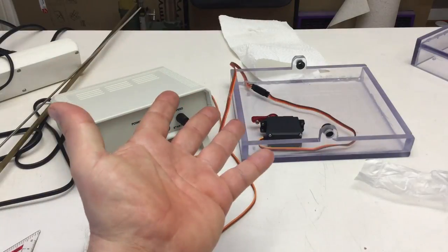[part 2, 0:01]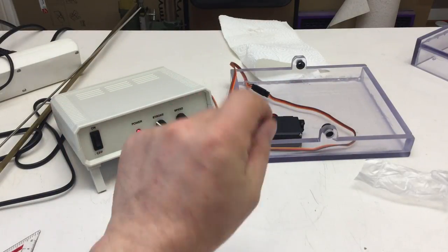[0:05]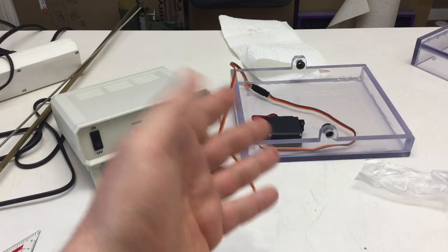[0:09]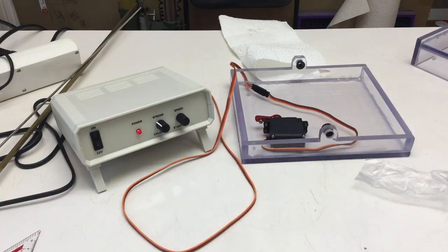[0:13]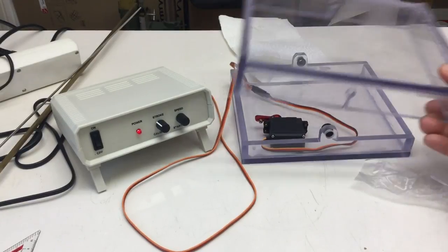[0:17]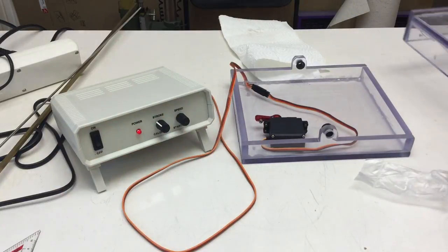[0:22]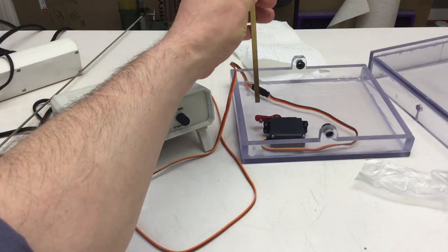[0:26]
Welcome back to the fourth part in my laboratory shaker project series. This time I will try to connect my servo in the lower part to the seesawing upper part, and this will hopefully happen through a connecting rod made here out of some brass material
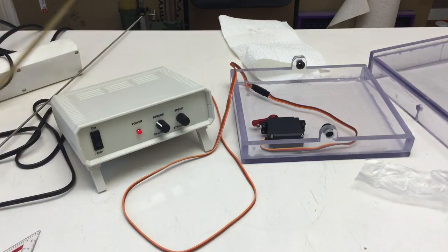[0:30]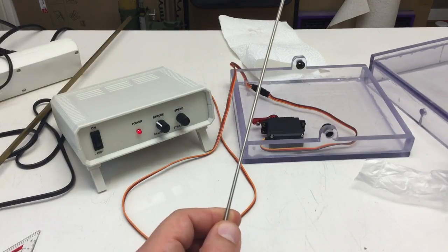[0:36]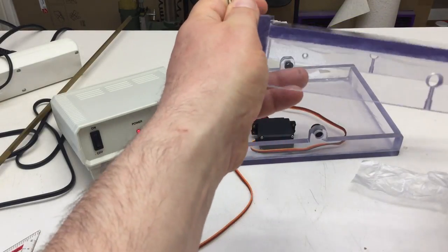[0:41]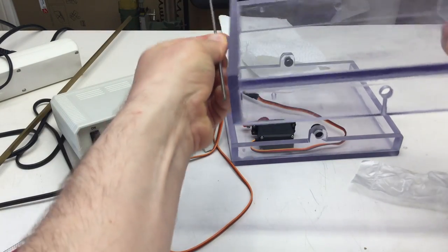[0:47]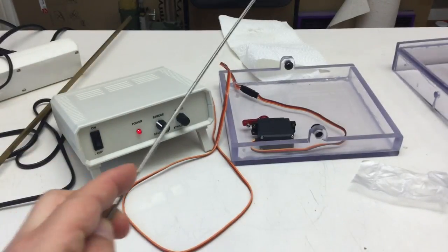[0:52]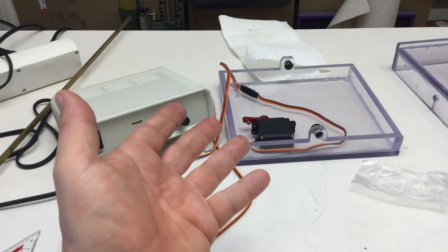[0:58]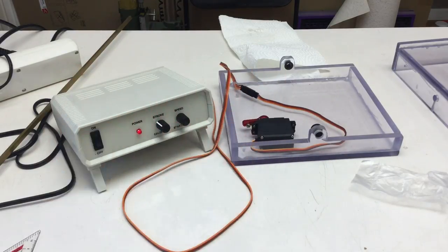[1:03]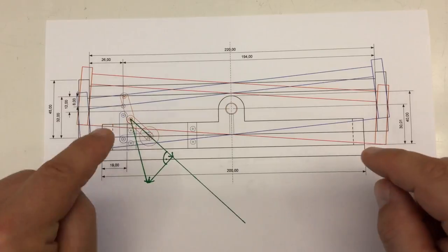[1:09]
and a pin made out of a threaded stainless steel rod that will go, yeah, we already drilled and tapped the holes, that will go as a pin through the top part and connect to the connecting rod. This will also probably be the last part for now about this project, because afterwards I have, hopefully, a working laboratory shaker. Before we dive in and actually make some chips, let's review the plan again.
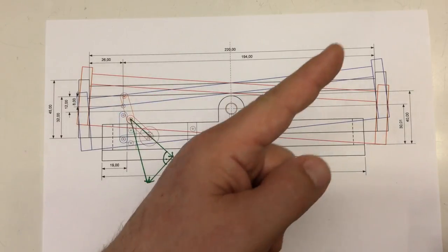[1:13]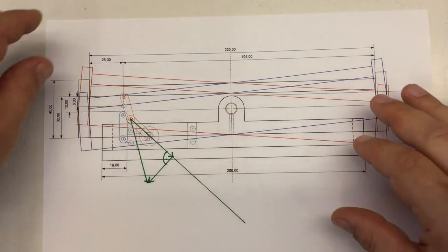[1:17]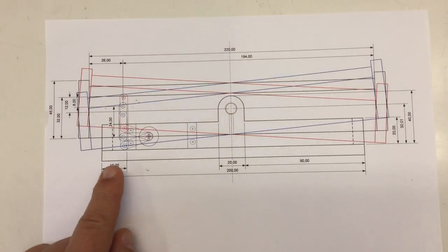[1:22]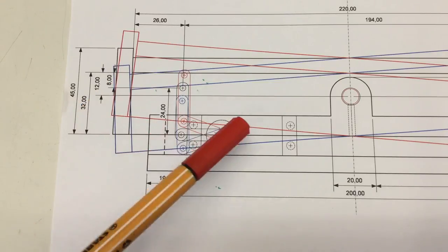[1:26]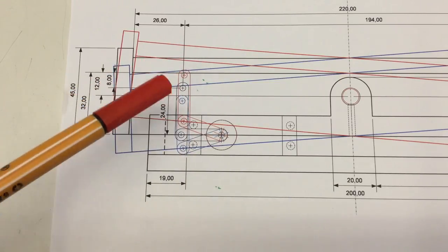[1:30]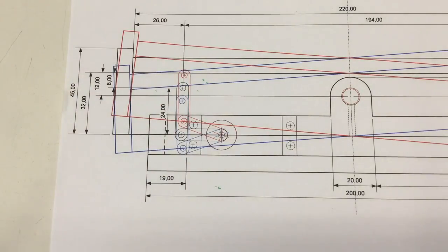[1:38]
That was the plan I showed you in part one, card here, link in the description, and I revised it slightly. It looks now something like that. The two differences to the original are really the length of the connecting rod, which is longer now, and the movement range of the servo, which is smaller now.
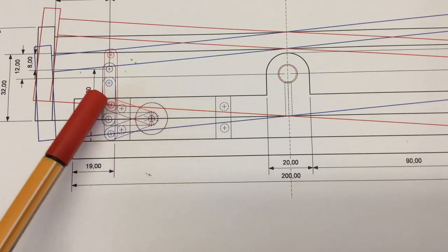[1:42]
So, first order of the day would be to shorten that servo arm because it is too long, then somehow create that connecting rod and the pin. And finally, mount the whole thing here, the servo in the lower part, and then put everything together.
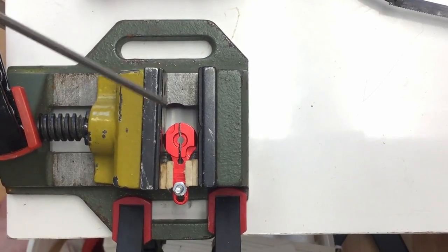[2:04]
It was quite hard for me to get a grasp on that servo arm, but yeah, lots of shimming involved, and in the end I managed to do it. I also put in a screw here with washers on the top and the bottom, the washers being steel, the servo arm being aluminium, so that hopefully keeps me from sawing into the meat that I actually need later on.
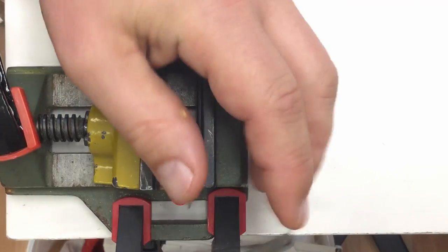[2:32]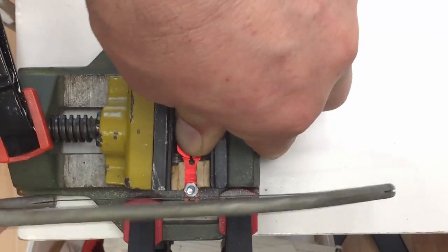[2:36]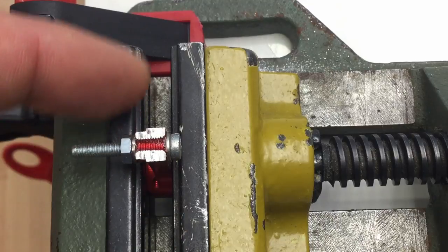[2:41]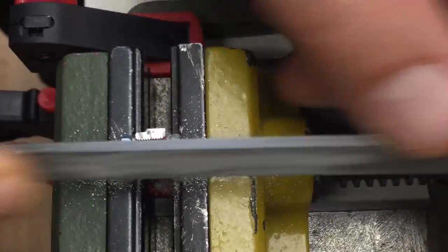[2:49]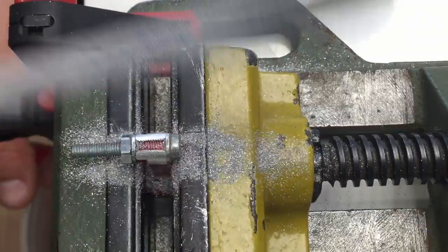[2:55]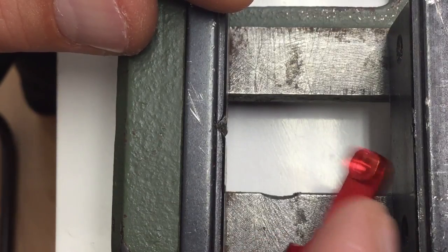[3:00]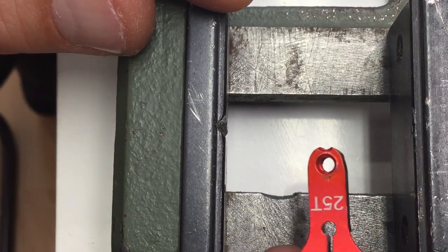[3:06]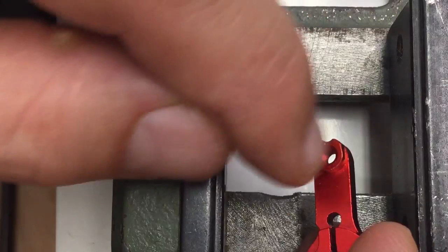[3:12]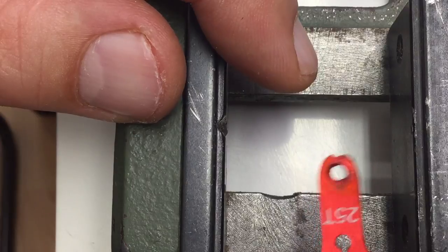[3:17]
Now I file a radius on here, again using the washers as kind of a guide. I touched it up with a little bit of red Sharpie, yeah, just for cosmetic reasons, and well, not perfect, but reasonably enough. I mean, the washer was, of course, a little bit off center, but yeah, nothing will be in the way of the movement, I guess.
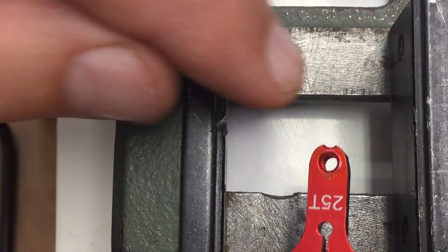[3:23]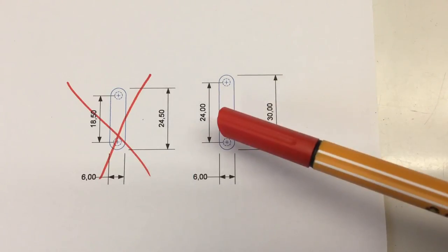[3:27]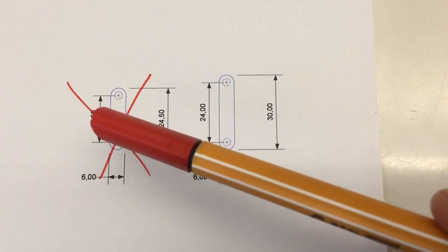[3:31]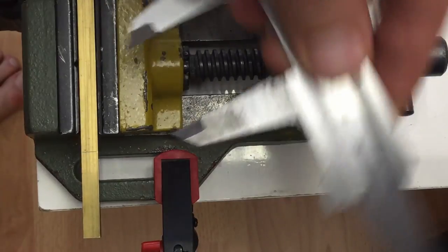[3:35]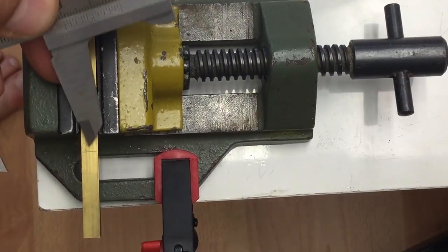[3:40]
So let's continue with the push rod. That's the plan for the push rod. Really a simple affair. Yeah, that was the old version. Let's get started on that. I made a mark at 30 millimeters approximately, so yeah, I will saw off a little bit left of it.
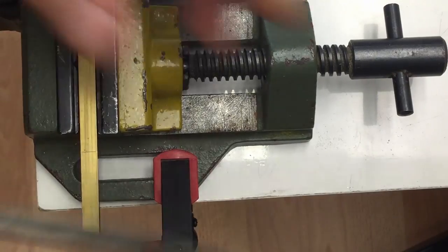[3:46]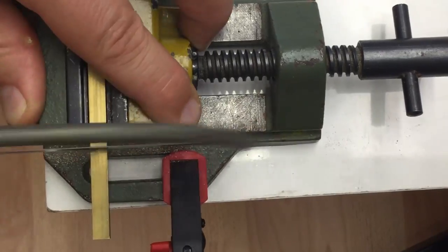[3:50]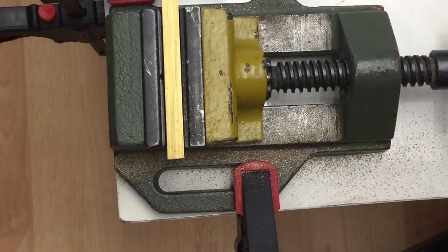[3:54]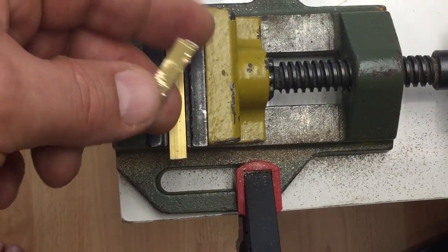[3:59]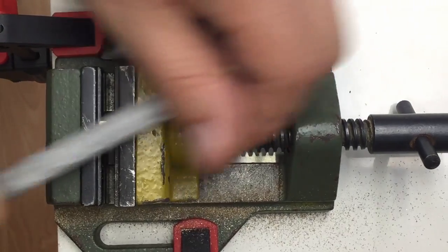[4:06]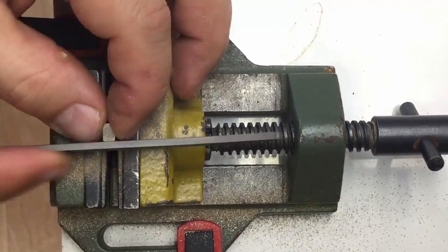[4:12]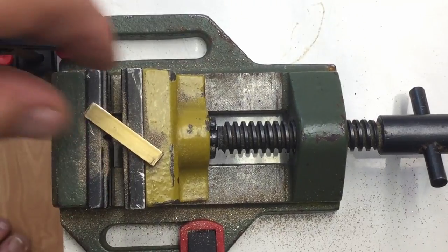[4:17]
I do need new saw blades for the small saw. Yeah. Let's file this to size. I just realized I don't really need to file it down to the final size, because I will put some radii on it on both ends anyway. So the important thing is now to place the holes at the right spots.
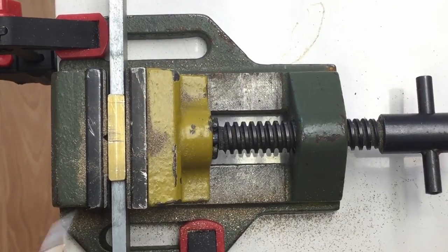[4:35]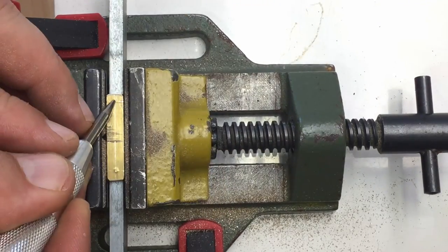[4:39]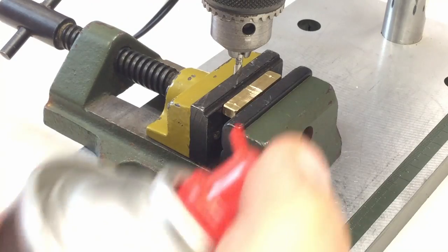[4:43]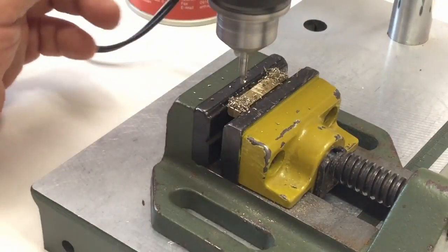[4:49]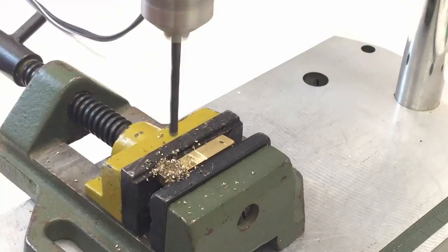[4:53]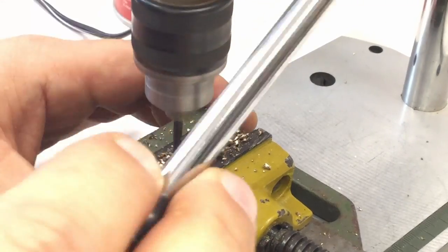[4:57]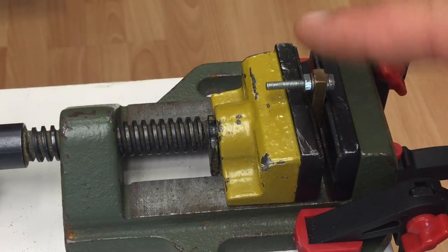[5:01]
And we're back to filing radii, and yeah, I use the same trick here with the washers and the screw through the hole. And fun fact, did you know that the first evidence of people using connecting rods in some kind of machine goes back only to the late 3rd century AD? So connecting rods are around for only 1,700 years or so. Well, maybe a little more, but yeah, you should think they figured that out earlier, but evidently they didn't.
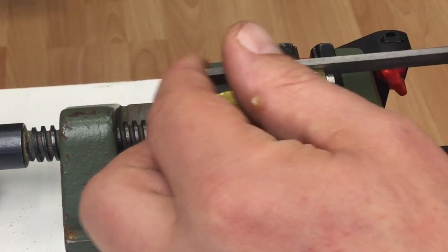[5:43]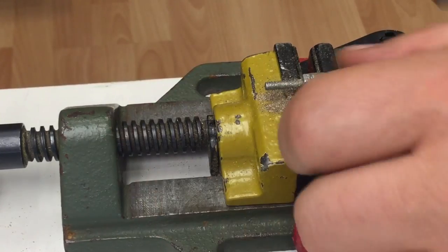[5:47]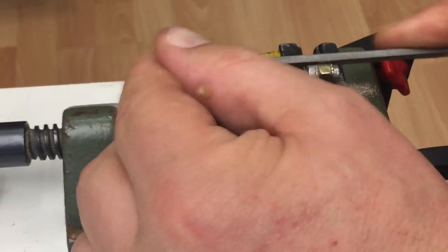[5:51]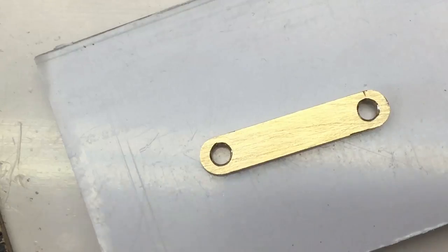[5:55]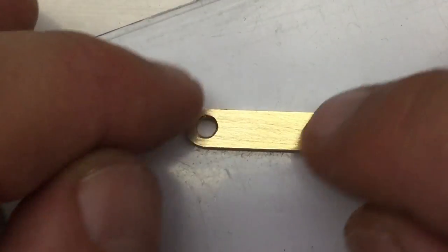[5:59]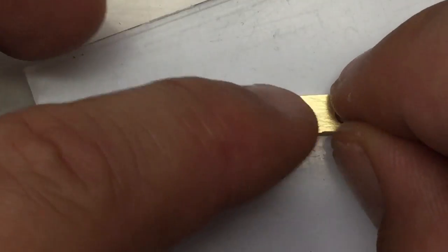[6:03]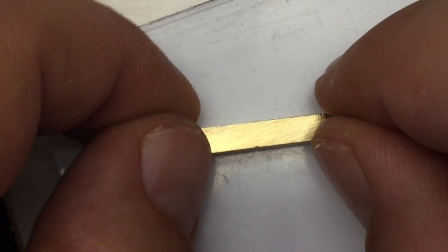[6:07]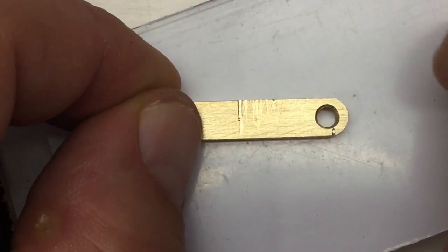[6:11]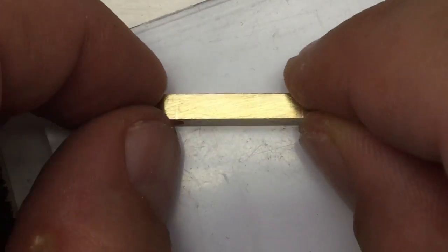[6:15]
So, that was a push rod, and yeah, I went over it with a little bit of sandpaper and then polished it. Well, not polished, but you know, with some stainless steel cleaning paste. And yeah, that was from the sawing, that was totally me, but yeah, it's nice and shiny.
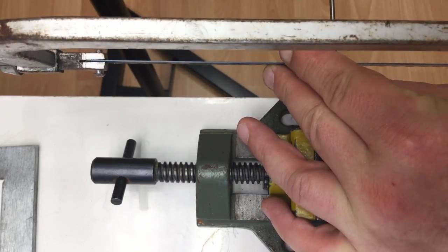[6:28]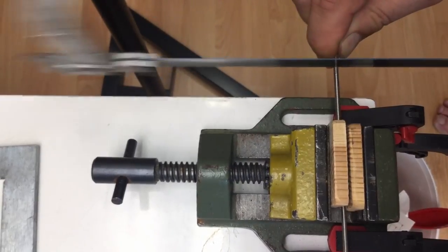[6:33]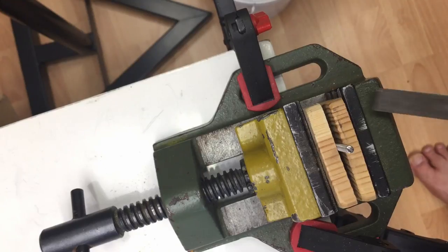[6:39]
The threaded rod, yeah, first saw off a 200 millimeter piece. I hope I'm sawing at the right side here of the marking. Next, I want to file kind of a cone here at one end. So if we push that thing through all the holes, we actually have a fighting chance of it getting through. And of course, I have wood in here just to, yeah, preserve the threading.
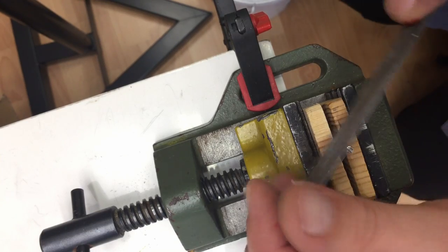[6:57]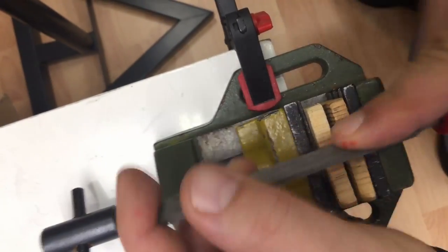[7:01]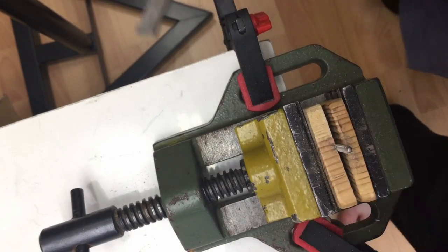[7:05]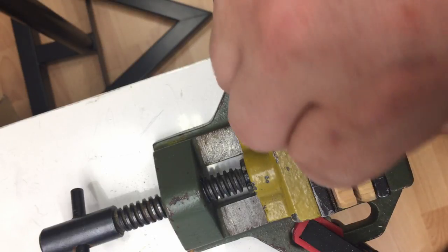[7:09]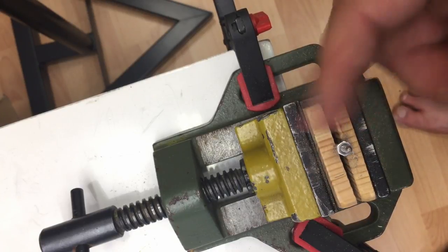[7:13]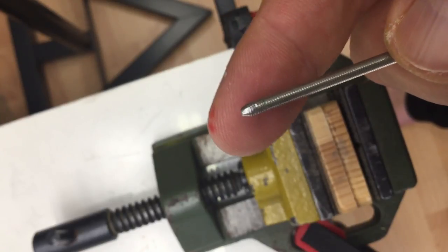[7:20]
That's coney enough. Let's see if we can still thread. Yeah. A nut on. Perfect. No problems. And yes, it's coney as hell.
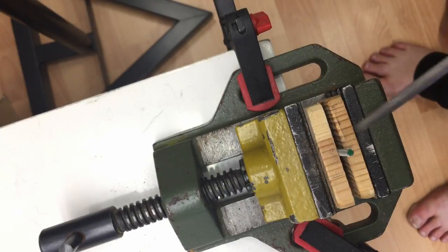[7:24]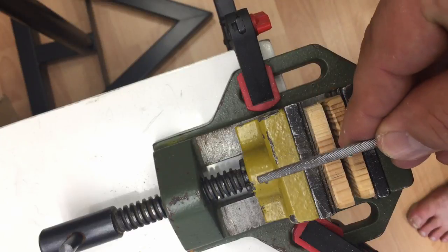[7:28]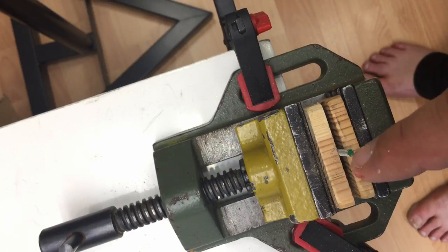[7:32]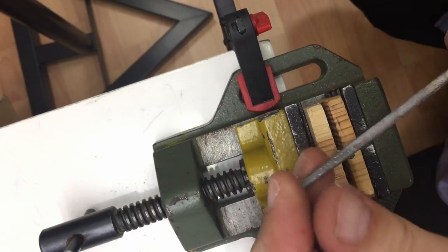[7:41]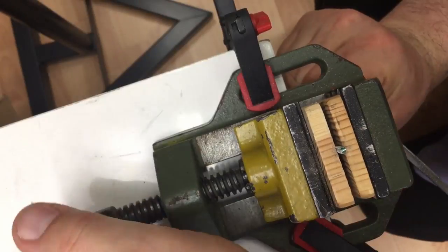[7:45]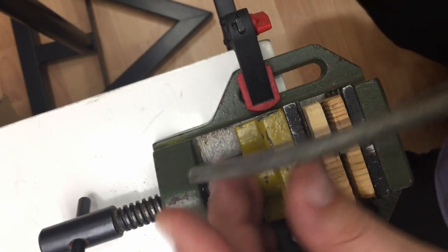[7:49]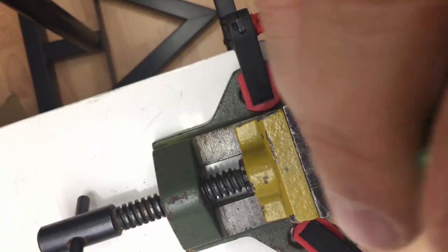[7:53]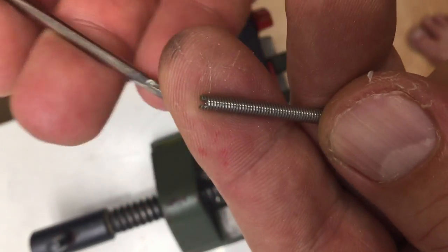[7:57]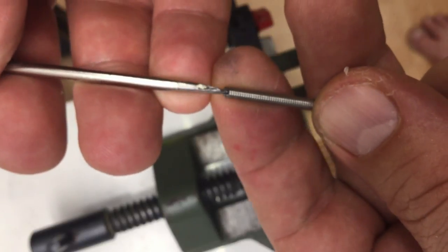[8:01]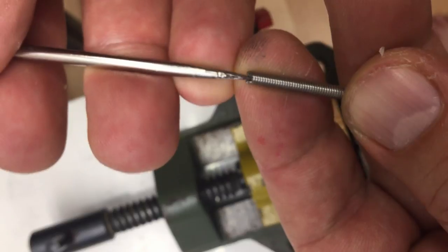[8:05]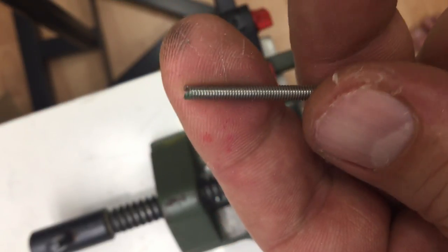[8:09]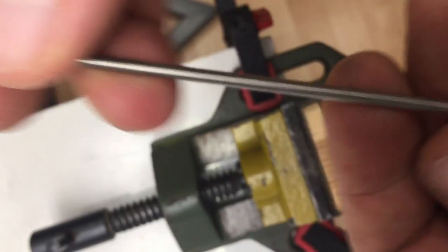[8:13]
Last operation on that rod, I want to have a slot, so I can turn it with a screwdriver for the last 5 millimeters through the holes when I can no longer grab it. So, yes, that fits perfectly. Any kind of suitable screwdriver. And now we could call the whole thing, instead of a threaded rod, yeah, a very long screw
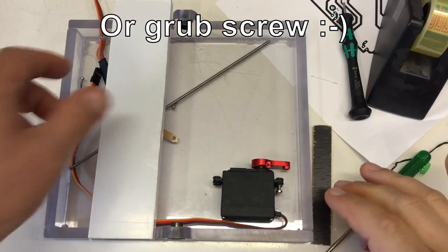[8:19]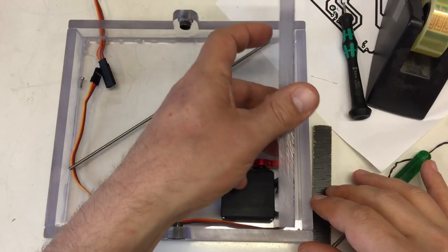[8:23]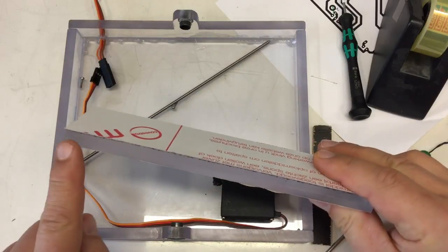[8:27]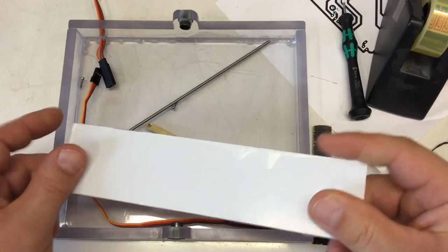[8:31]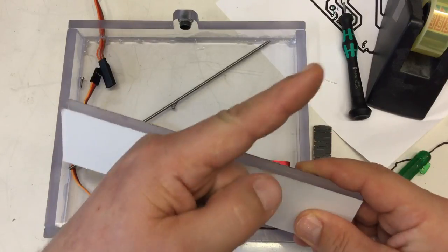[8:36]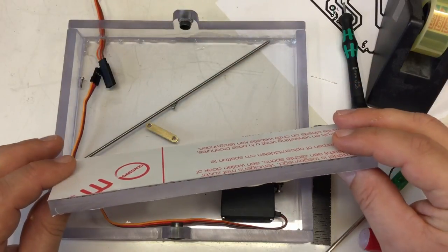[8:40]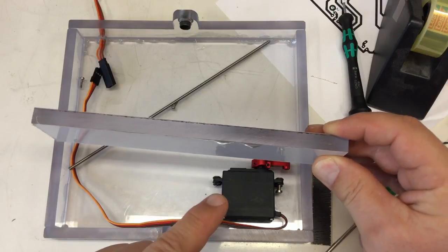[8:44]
without a head. The last parts we need are some polycarbonate blocks here and here to mount the servo. And I will use for that 10 millimeter polycarbonate that I have left over from the laboratory water bath project. Card to the playlist here, link in the description. But there are some difficulties there.
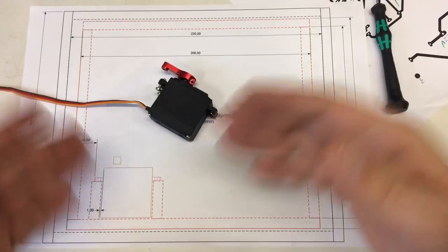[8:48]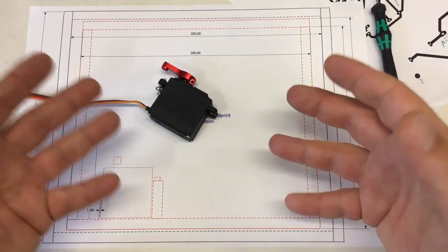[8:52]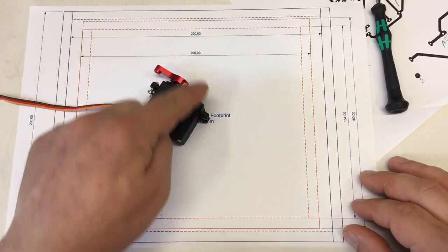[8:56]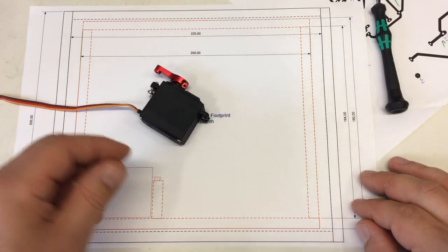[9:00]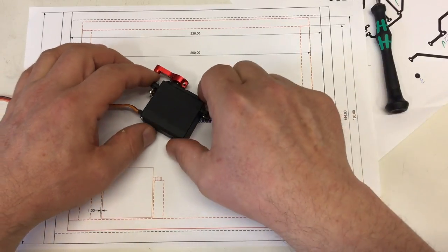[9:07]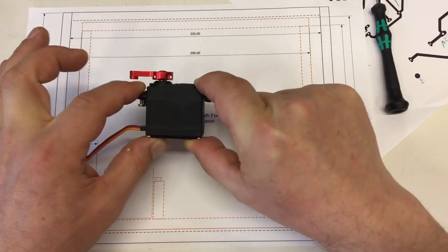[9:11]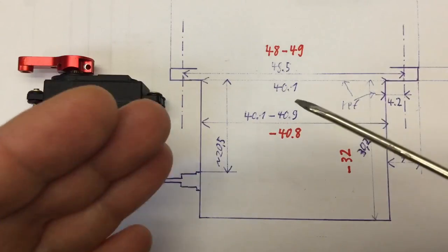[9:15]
You see, when I was planning the whole thing, I was under the impression that servos of a certain size, like a full-size servo, and there are mini servos and micro servos, maybe there are even pico servos, I don't know, I'm not an RC guy. But I was under the impression that a servo of a certain size has a certain size. Turns out that was a wrong assumption.
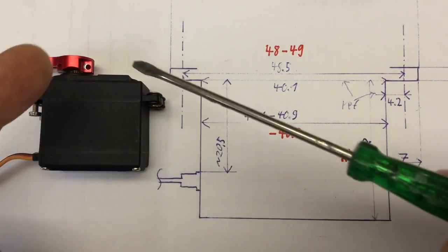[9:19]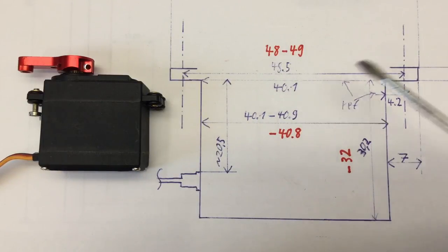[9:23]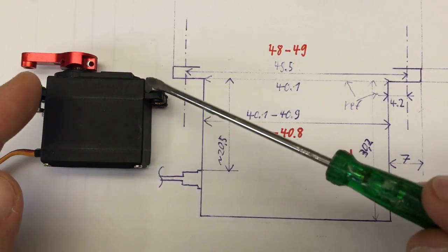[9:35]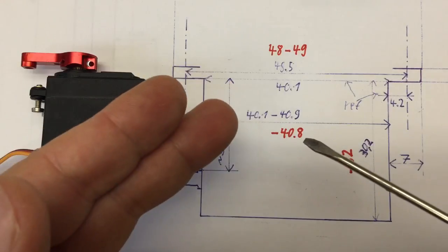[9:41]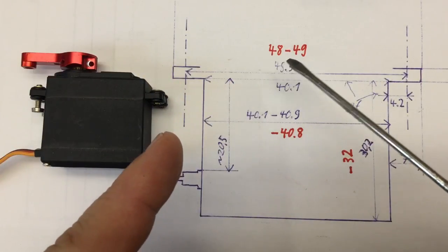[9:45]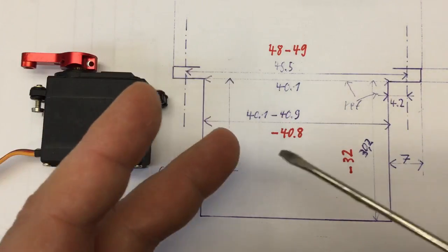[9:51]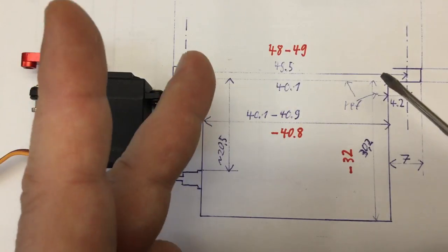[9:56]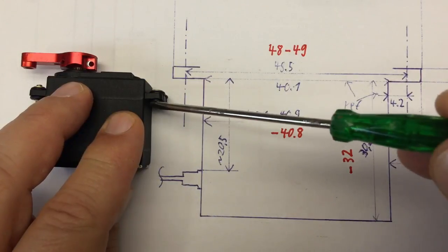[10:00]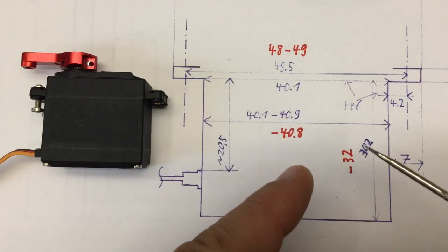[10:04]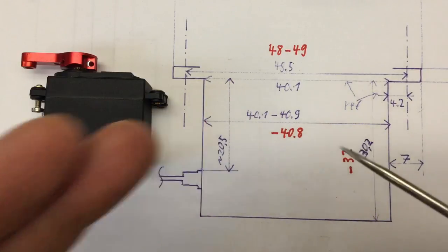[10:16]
So my specific full-size servo here has, for example, 45.5 millimeters between the holes on that axis. And the body is between 40.1 to 40.9 millimeters thick, depending on where you're measuring. Other full-size servos have between 48 and 49 millimeters between holes, and they are up to 40.8 millimeters wide in the body. And from these flanges to the bottom, my servo is 30.2 millimeters. Other servos are up to 32 millimeters. So I'll somehow wing it.
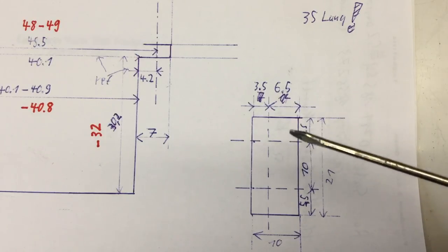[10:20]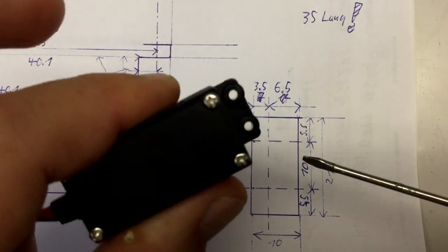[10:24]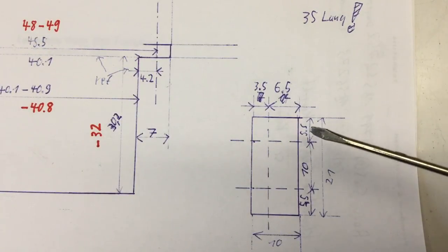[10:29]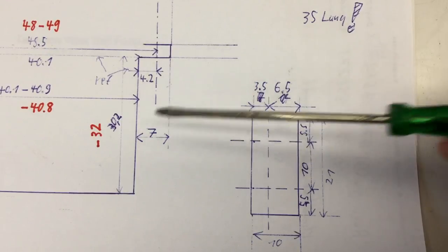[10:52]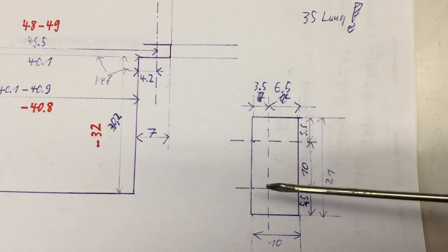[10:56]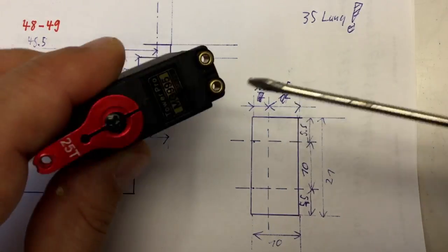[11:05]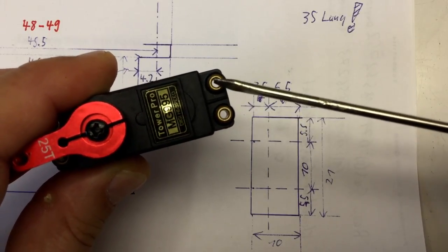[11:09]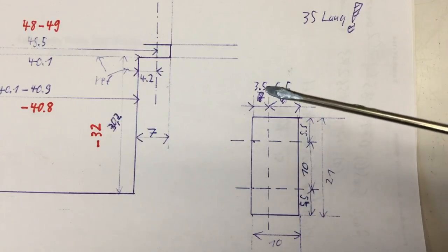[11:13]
And I haven't talked about thickness, yes? So my servo is 19.9 millimeters thick. Other servos are 20 point something millimeters thick. So in height, I will need to accommodate maybe a future servo change, 21 millimeters. And then I will go in with the holes for the screws from the inner edge 3.5 millimeters, and the holes are 10 millimeters apart. That's really about the only measurement that is the same between servos of different vendors. Okay, so let's build these blocks here.
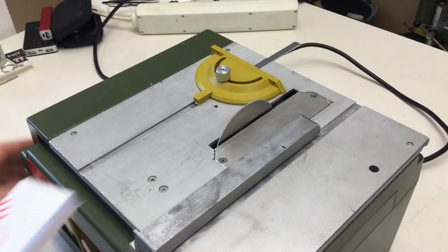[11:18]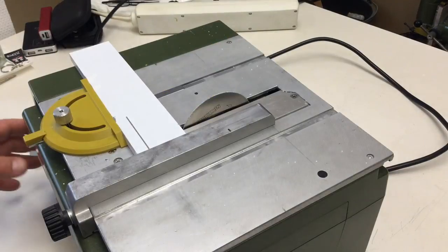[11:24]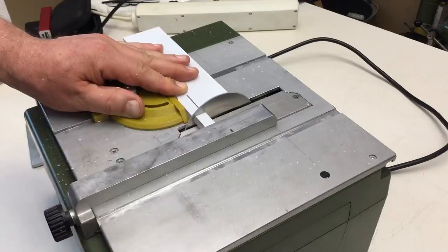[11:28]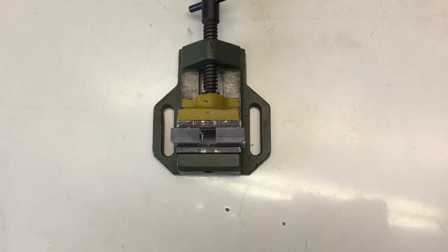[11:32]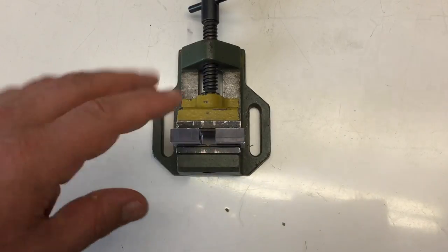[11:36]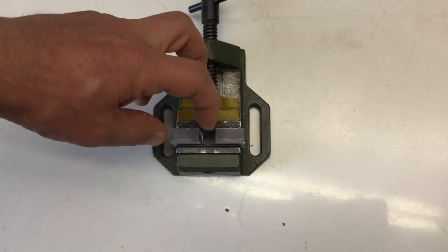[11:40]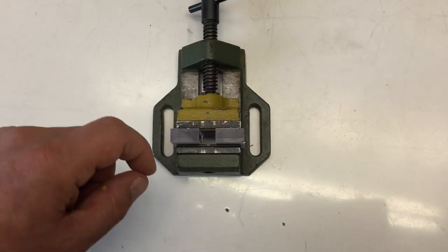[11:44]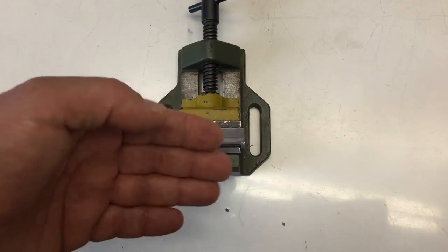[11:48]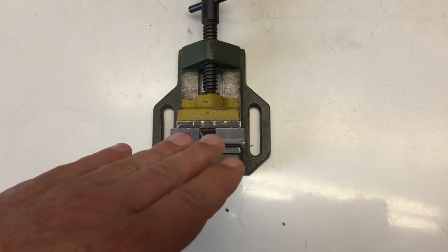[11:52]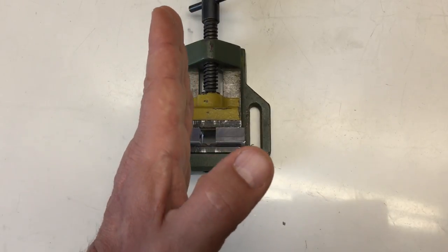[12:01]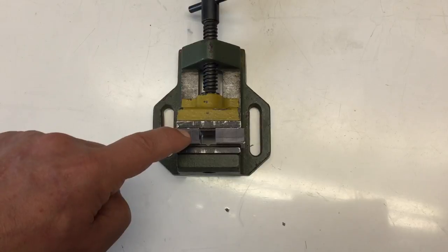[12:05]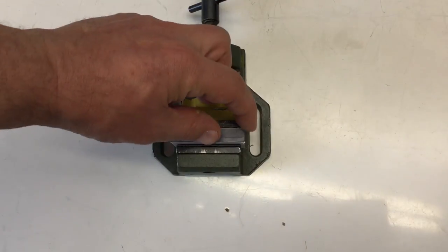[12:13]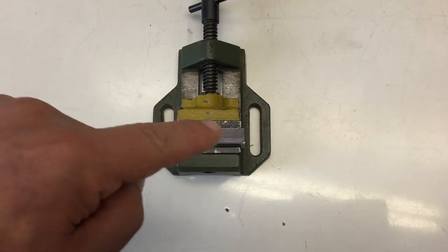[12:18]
Now I have two identical blocks, almost to the size I wanted. Actually, in each dimension I cut half a millimeter too large, and I guess that's a systematic error in my table saw. I was pretty sure I adjusted it to the tenth of a millimeter, but the way that thing is built, the blade got a little bit of flex. So for this material and that blade, I have to subtract half a millimeter in the future from my measurements, or in how I adjust the saw. Anyway, let's put four holes in here and cut some threads.
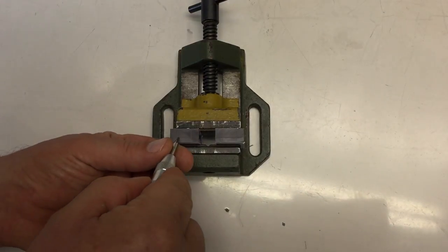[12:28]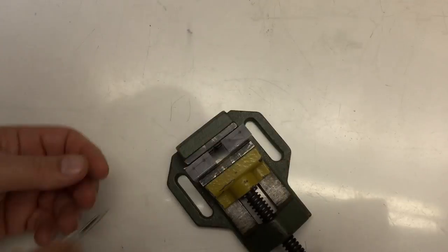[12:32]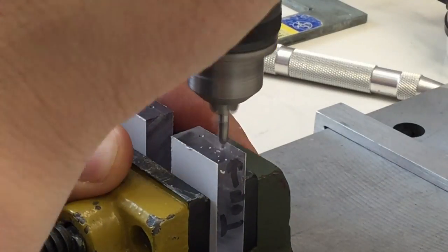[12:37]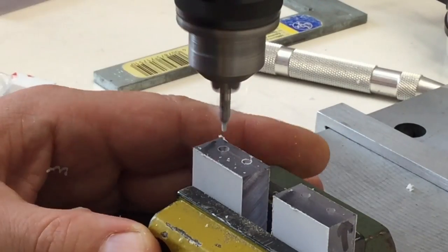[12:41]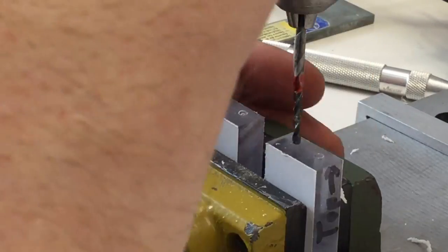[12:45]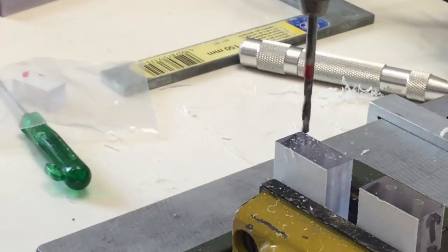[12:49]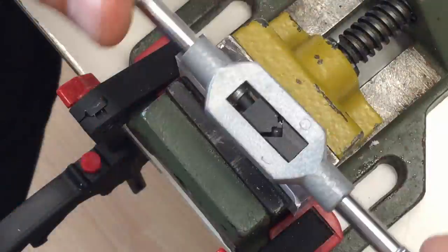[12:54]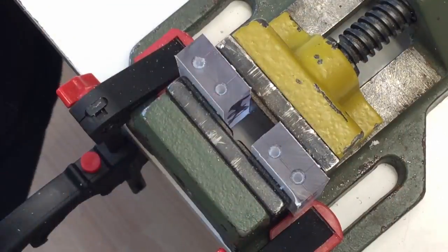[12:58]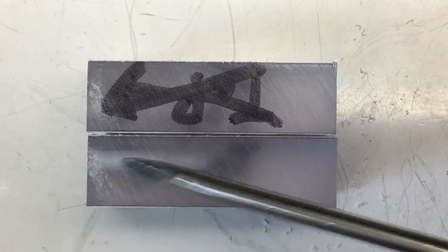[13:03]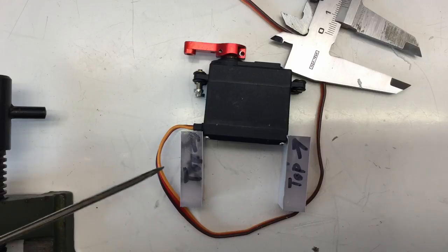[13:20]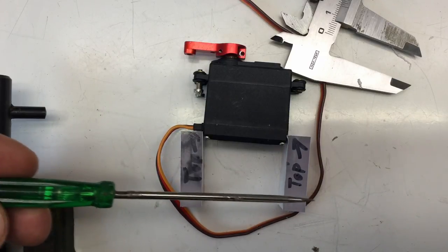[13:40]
Now I have two identical blocks with four drilled and tapped holes. Please note that I drilled the holes 5 millimeters deeper than the tap for the thread is going, so I had a lot of space for the debris and the chips. Now I need cutouts at the back of both pieces for the cable and the cable outlet of the servo. Naturally, the one on this side will be a little bit bigger because of the servo cable outlet, and that one here will be smaller because I just have to pass the cable through.
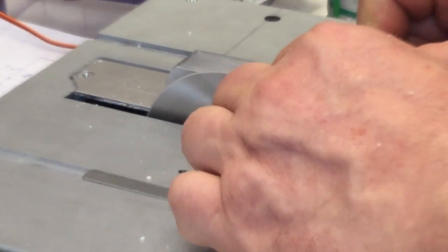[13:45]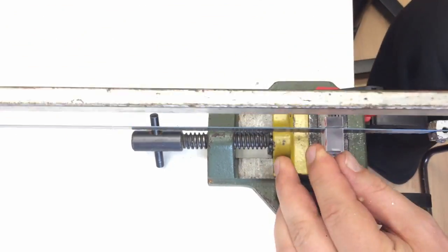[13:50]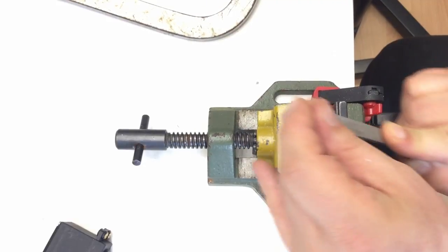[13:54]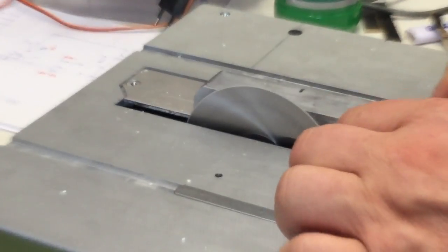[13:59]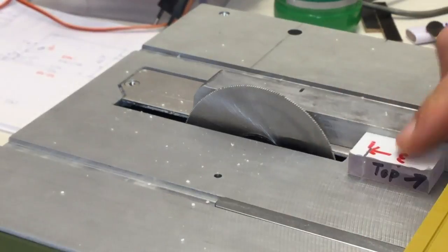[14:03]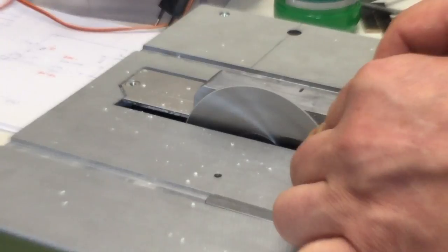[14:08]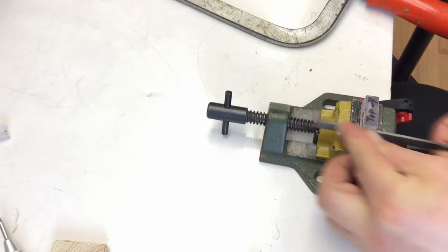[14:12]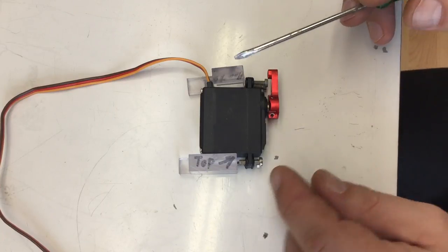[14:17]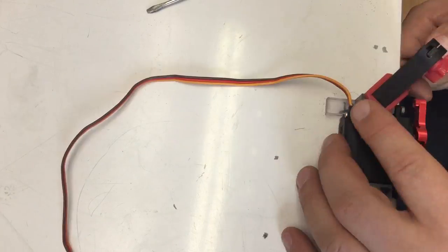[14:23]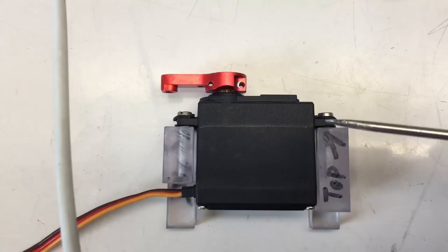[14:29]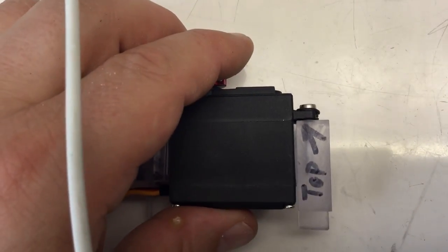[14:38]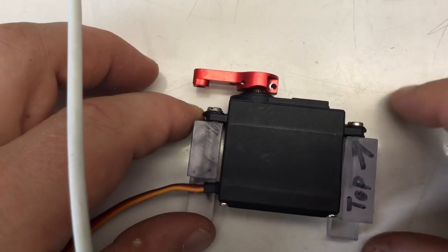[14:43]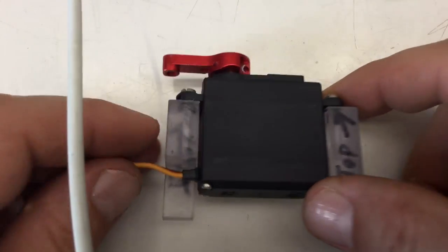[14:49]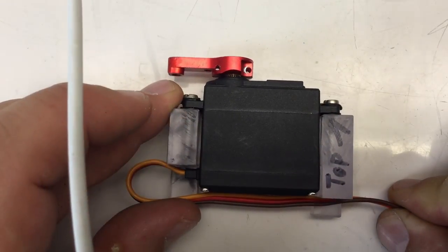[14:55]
So let's screw the servo to our blocks and hope for the best. Okay, I fumbled around a bit. It's not really important that these blocks are parallel to each other, but it's nice. And we have a little gap between the block and the servo as intended. Here on that side too, there's enough space for the cable. I think after cleaning up, I'm ready to glue that servo in.
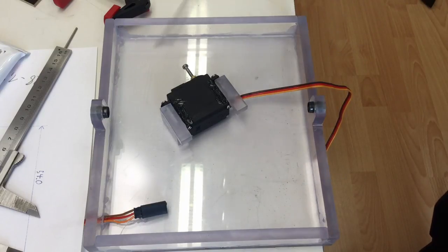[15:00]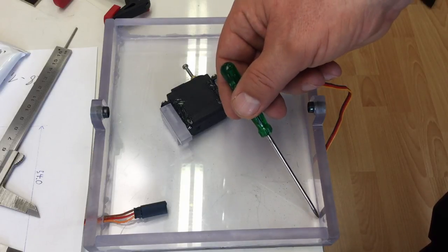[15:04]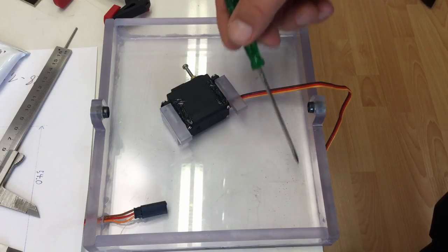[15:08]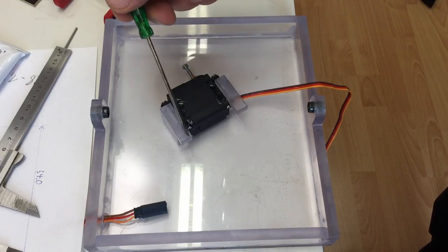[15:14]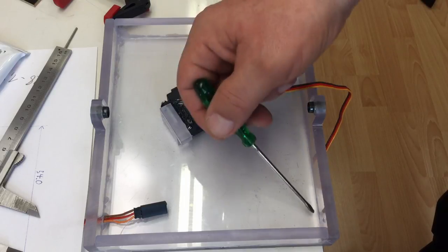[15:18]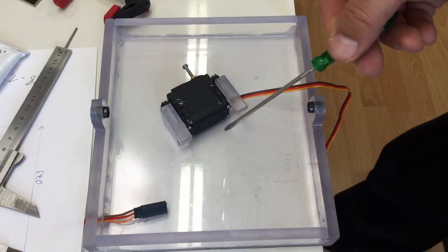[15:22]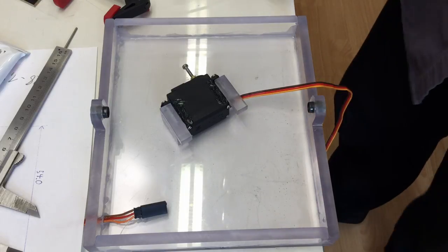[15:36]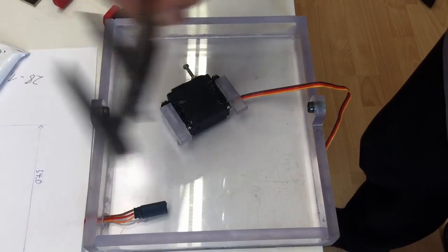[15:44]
I cleaned up everything really well with alcohol. Before that, I scraped that edge out just to make sure that there's no glue from the previous operation interfering. I also have a little chamfer on these edges, so no interference in that corner. And just to be on the safe side, I put a wee bit of grease on the edges of the servo, so as not to glue the servo onto my bottom piece too. Okay, wish me luck.
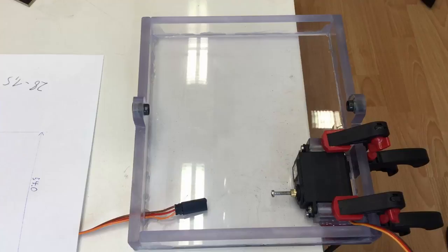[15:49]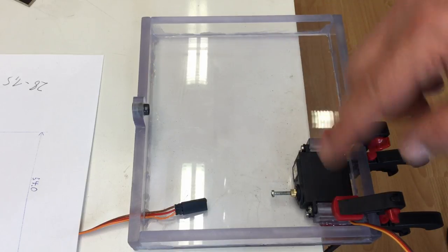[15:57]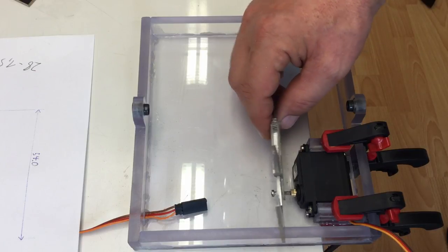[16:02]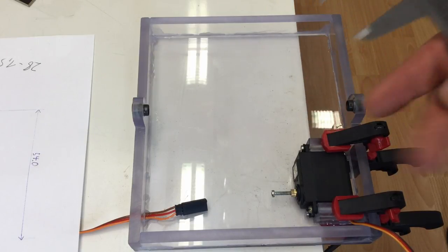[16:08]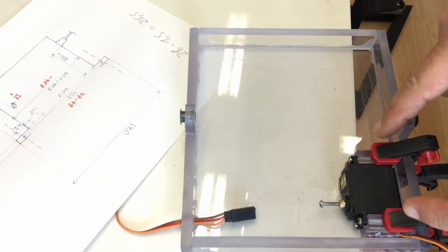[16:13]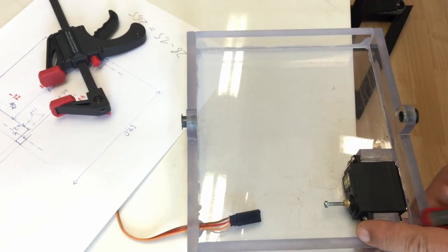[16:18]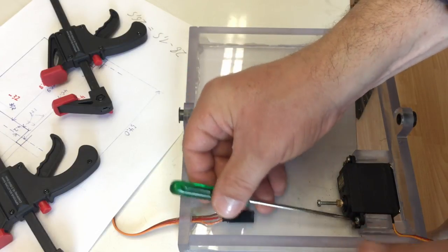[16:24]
That's an M3 screw here, and I know the exact distance to that edge to align the whole thing. And I forgot to film the whole thing, sorry about that. Just me fiddling around with glue and clamps and making sure that the distance here is all right. And the usual. Now, of course, we let that glue dry and then we put everything together. The glue dried overnight, so now the question is, before we put everything together, can I still remove the servo out of the case, or have I glued it in too?
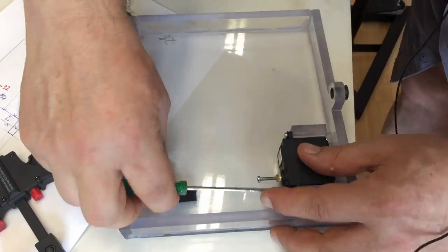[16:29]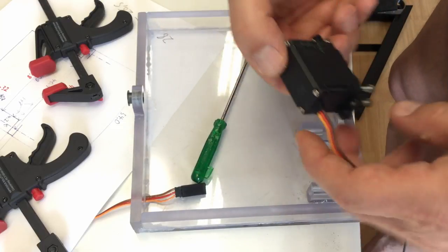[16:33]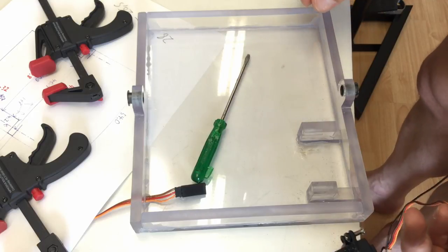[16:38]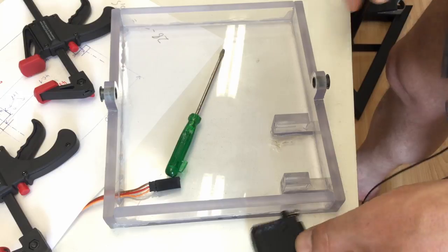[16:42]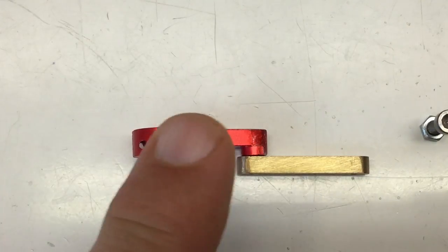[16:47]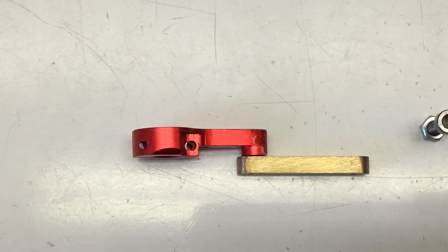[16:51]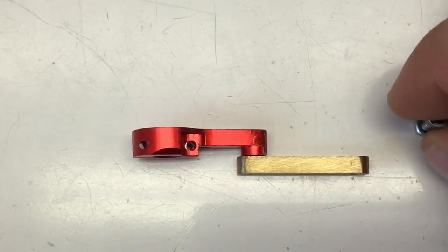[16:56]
Nope. The grease worked really well. So, yeah, I'm happy. I will clean that up now, and then for the last time, really, we will put everything together. Let's start with the servo arm and the connecting rod. And I changed from slotted head screws to hex head screws, because these are too fumbly.
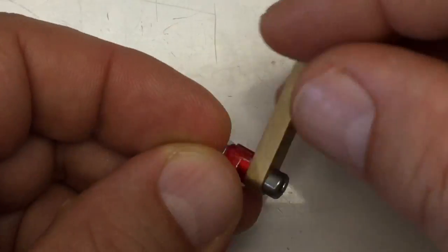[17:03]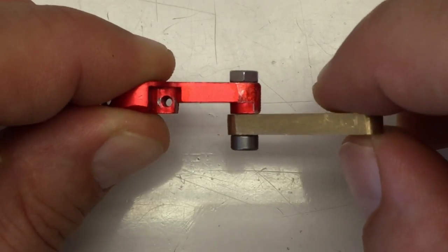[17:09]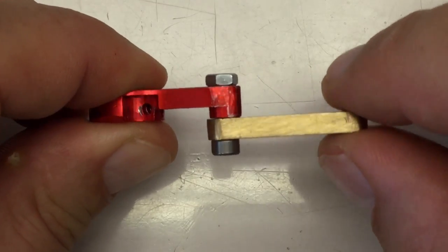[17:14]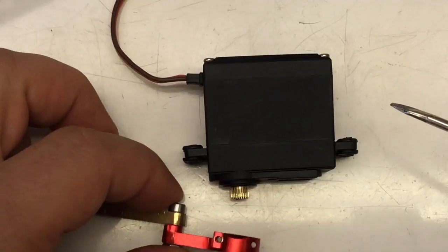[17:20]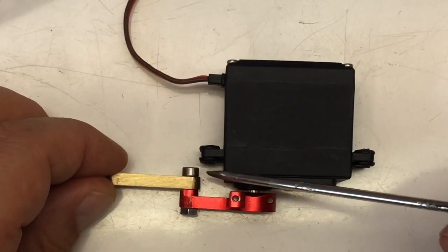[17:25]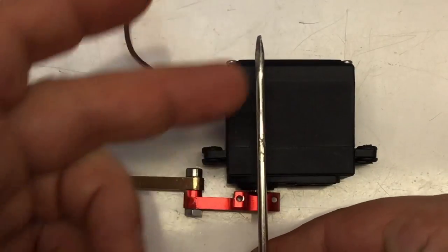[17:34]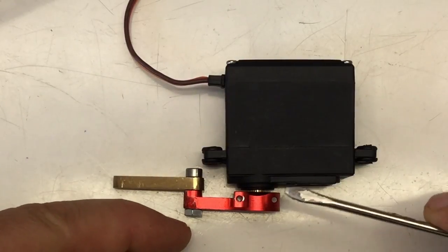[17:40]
Okay, the trick here is, of course, to have it freely moving, but there is a bit of wiggle, but almost no wiggle along the axis. Next, we attach the servo arm to the axis, and please note that I went in here with the connecting rod so as to minimize the axial forces acting on the axis of the servo, because if the rod is further out here and pushing, you have a longer arm on the axis.
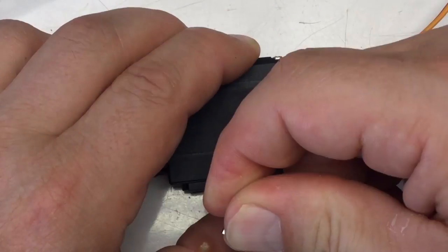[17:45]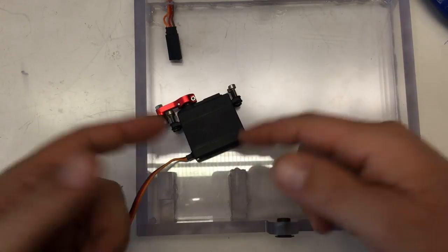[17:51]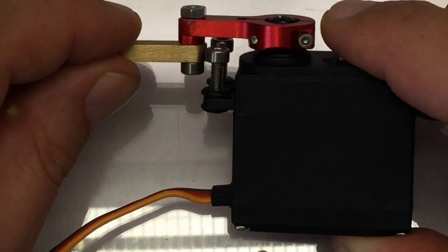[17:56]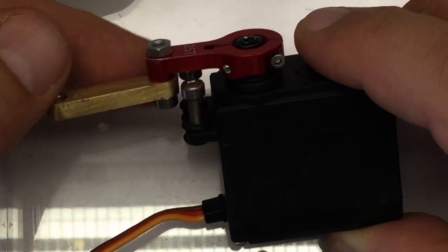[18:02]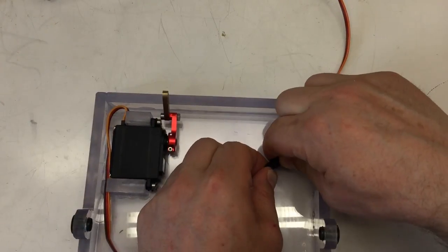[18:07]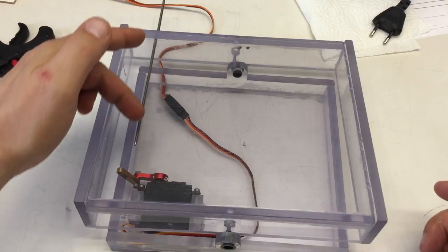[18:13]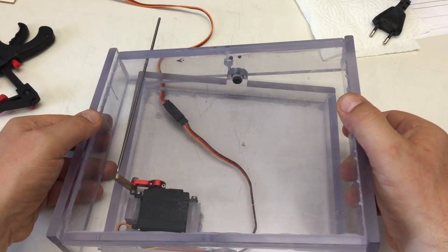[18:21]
Now we can attach the servo to the mounting blocks and the lower case, and please note there is just enough clearance here so that the connecting rod assembly will not interfere with the heads of the screws. Now we thread the pin, and I already screwed it in quite some ways through the connecting rod and the hole on the other side. If my theory about that is right, this shouldn't be that hard.
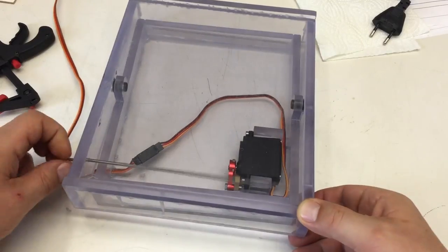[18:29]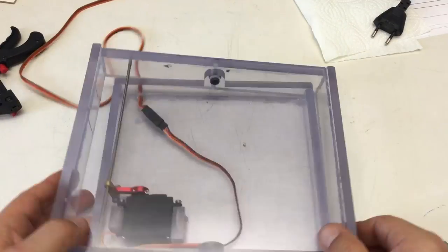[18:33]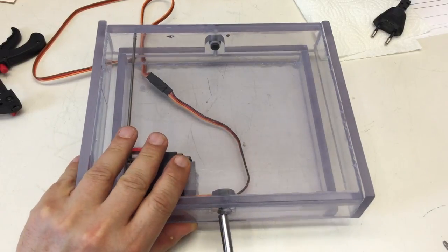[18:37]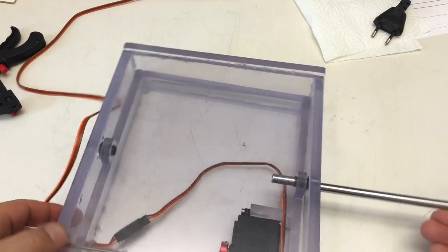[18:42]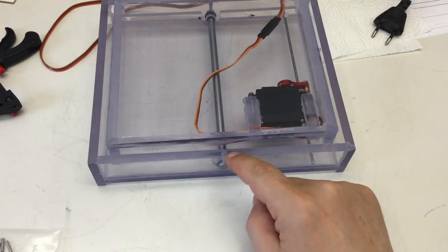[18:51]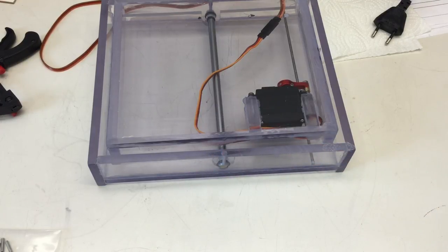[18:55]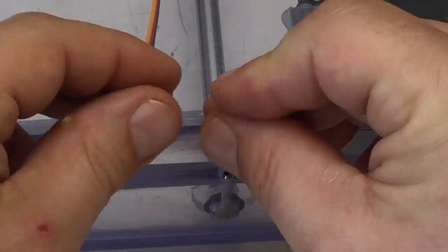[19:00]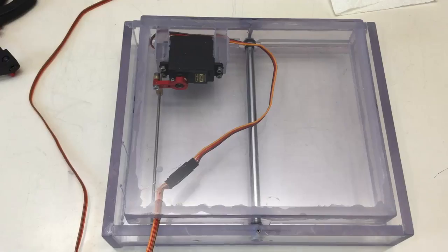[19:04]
Finally, we push the axle through. I hope at least that's still working. Yeah, like clockwork. And we add our grub screws here at the end of the axles to keep them in place. One last touch, and then we're finished.
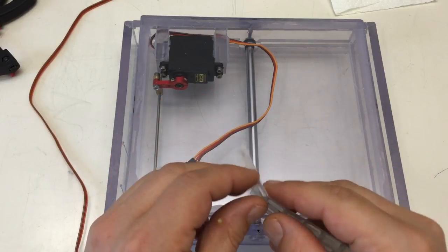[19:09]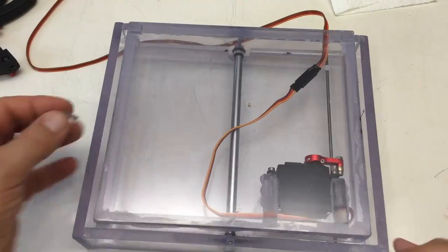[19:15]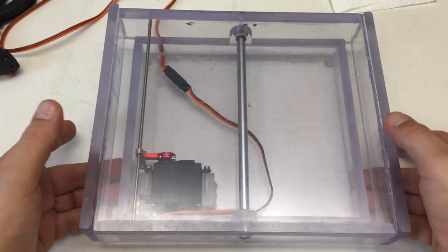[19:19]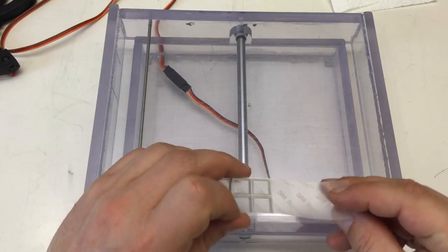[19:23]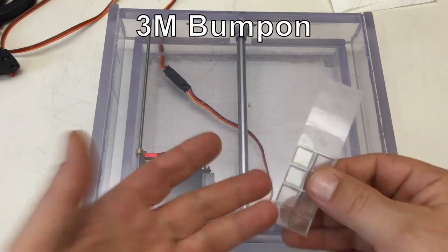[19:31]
Yeah, rubber feet. Clear, of course. Oh yeah, these feet are really good, by the way. They are from 3M. 3M Bumpon. It's the name, if you want to buy them.
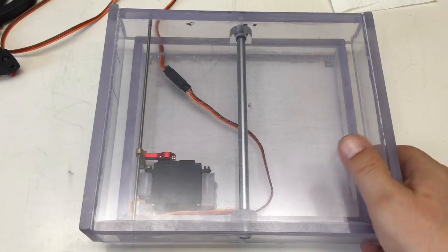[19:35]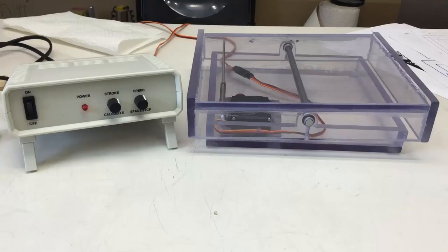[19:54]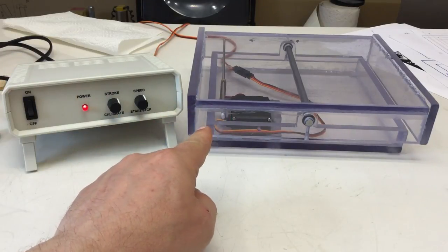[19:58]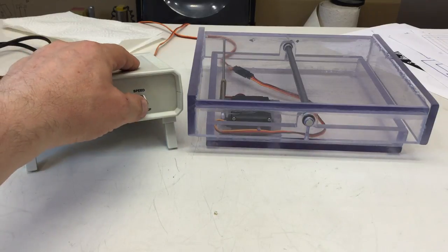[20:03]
Do you hear that? That's the sound of a high-torque full metal gear RC servo getting ready to tear apart my flimsy construction. Okay, let's move on to the tests. Okay, fire in the hole. Oh, that looks almost good.
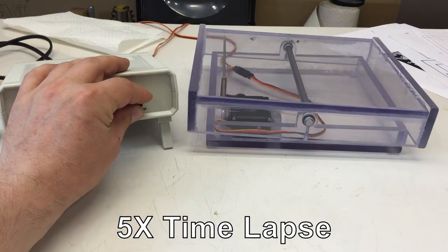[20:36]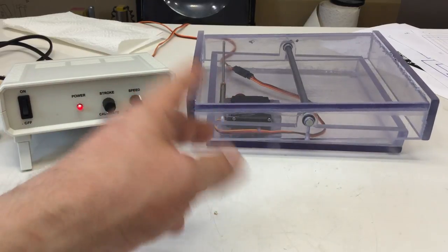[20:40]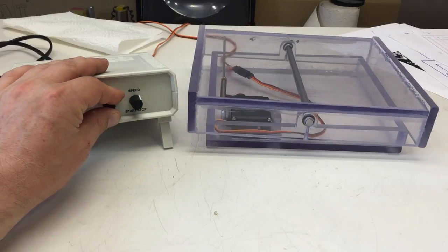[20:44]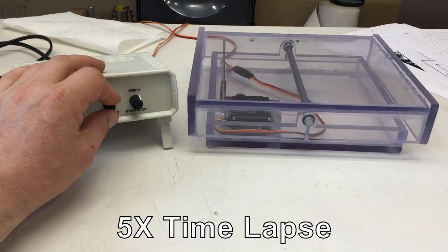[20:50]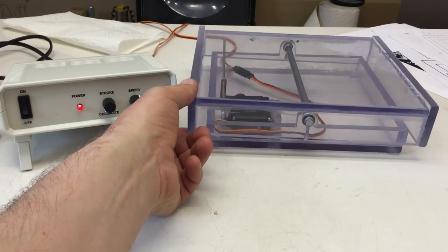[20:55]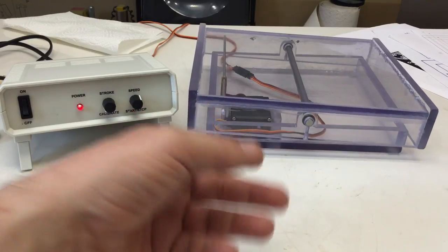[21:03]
We've got resonance. Okay. That was an effect I didn't consider. Yeah, we'll need, of course, to see how that thing behaves under load. I can still increase the stroke, I guess, without crushing things. I'm trying to determine. Yeah, it's probably the pin. Yeah, I can feel it. The pin has a little bit much give, but that can be remedied.
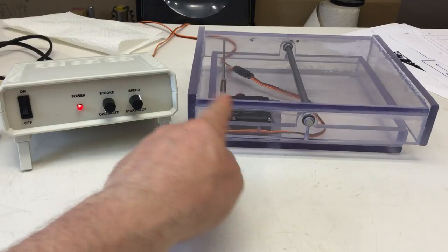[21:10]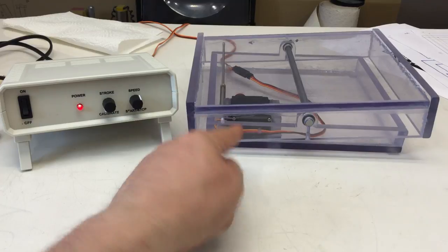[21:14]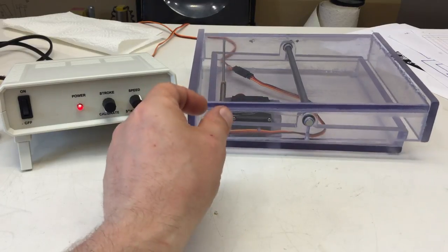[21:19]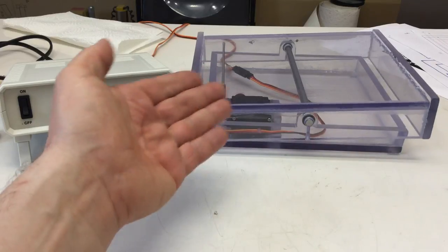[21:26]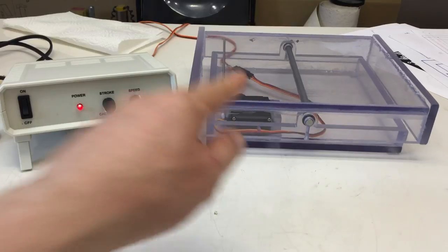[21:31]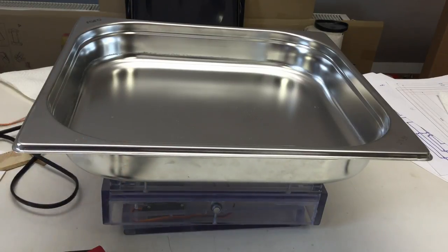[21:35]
I actually have enough meat there to replace the M3 threaded rod by an M4 or 4mm rod, just with M4 threads at the end, if the need should arise. But now let's put some load on that thing. So, my laboratory water bath, and I cannot fit the controller in the view. You have simply to believe me that I'm pressing buttons and turning knobs somewhere.
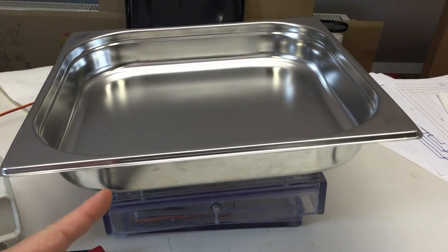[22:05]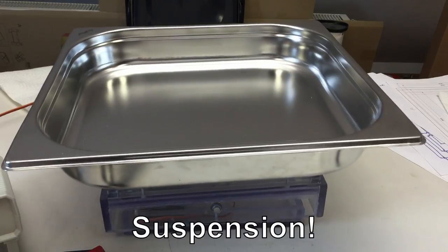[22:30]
So let's see if we can get this resonance thing again. I mean, not that it's useful, but it's interesting. So with more weight on it, I can actually turn up the speed quite high without running into that resonance problem. I mean, that flex here in the pin has, of course, advantages. It adds a little bit of, not dampening, but you know what I mean.
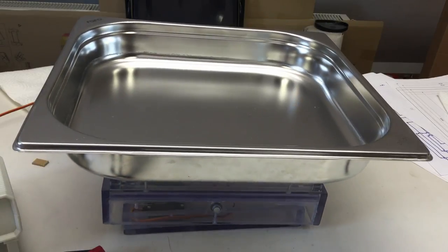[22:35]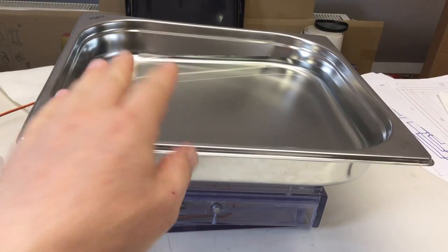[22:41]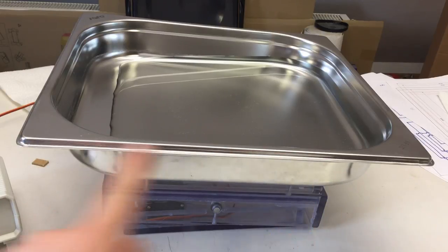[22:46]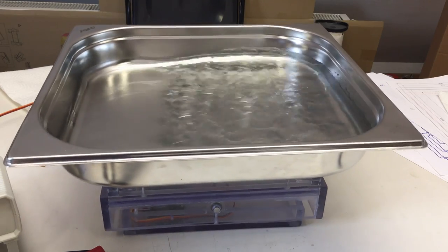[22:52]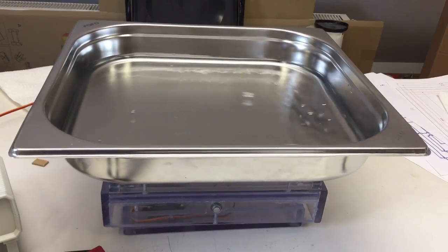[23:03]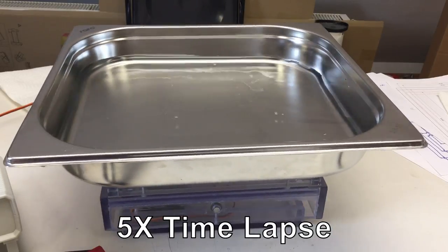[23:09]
Okay, let's put some water in there. We have 1 kilogram or 1 liter of water in there now, and I kind of regret that I set the stroke that high. But anyway, fire in the hole. Ooh. And slower, slower, slower. Okay, and less stroke. Less stroke, please. Much better.
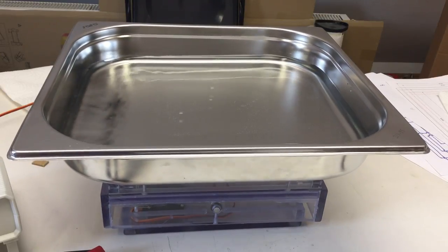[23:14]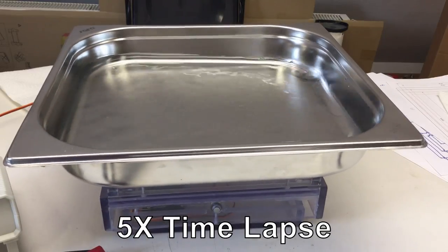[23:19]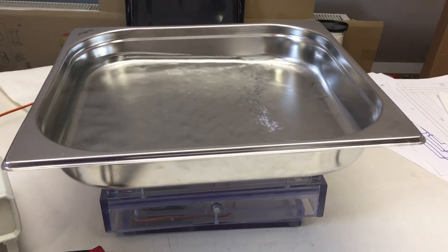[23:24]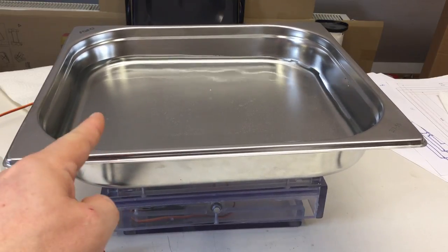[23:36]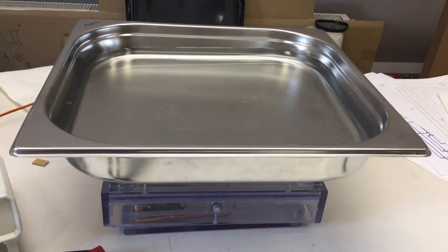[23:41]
A little faster. Wow, we're making waves, huh? A little slower again. A little bit less stroke. And stop. 1 more liter, huh? 2 liters, 2 kilograms, fire in the hole. No problem at all.
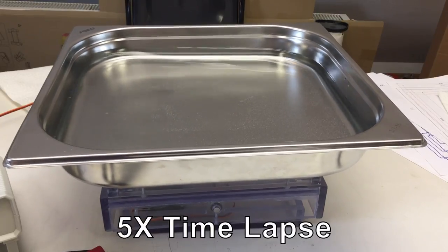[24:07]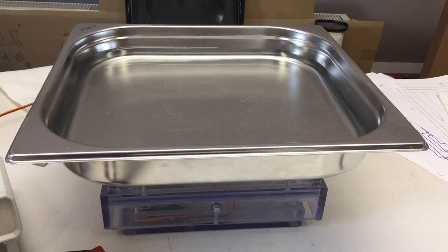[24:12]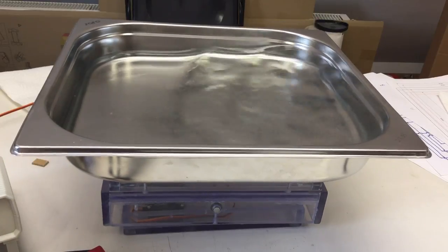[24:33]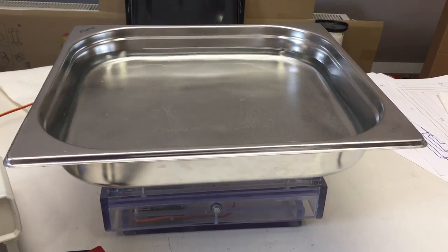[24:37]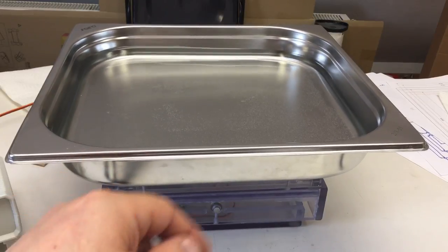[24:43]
But I can hear it working. But it's okay. Let me minimize the stroke and go up with the speed. Yeah, that works nice. Okay, down with the speed again. Oh, resonance frequency. Okay. Let's stop it and put a realistic load on it.
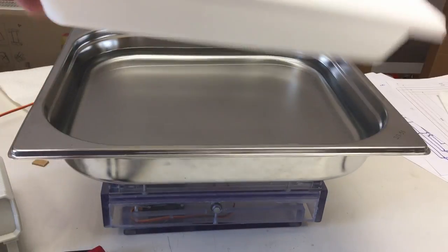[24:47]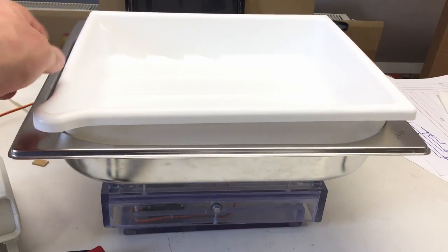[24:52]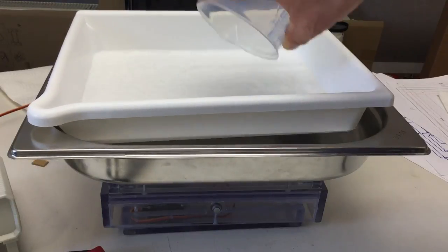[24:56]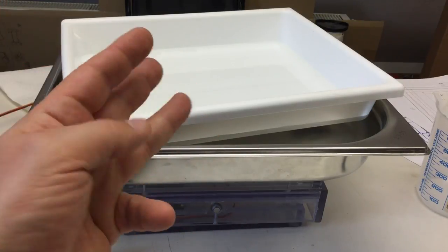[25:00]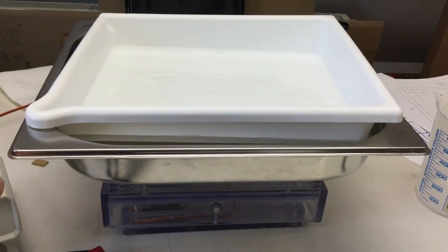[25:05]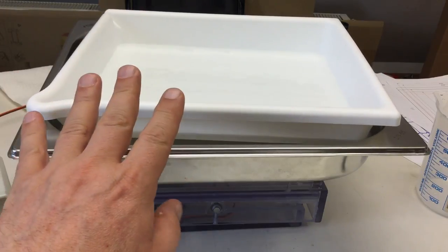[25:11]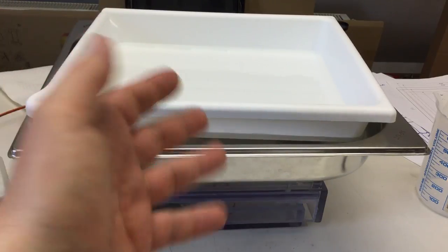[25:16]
And that would be one of these rather large photo development dishes and another liter of water in there. So all in all, we have now 3 liters, 3 kilos of water in here, and I guess together with the laboratory bath and that thingy here, we are at about 4 kilograms total load on the shaker. Yeah, over 8 pounds. Let's see.
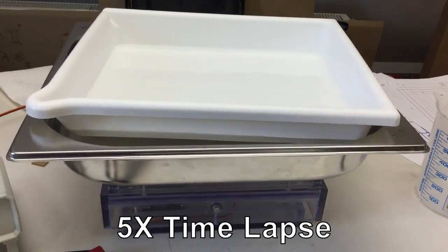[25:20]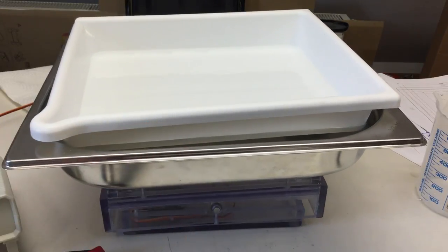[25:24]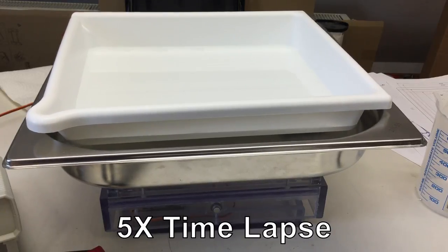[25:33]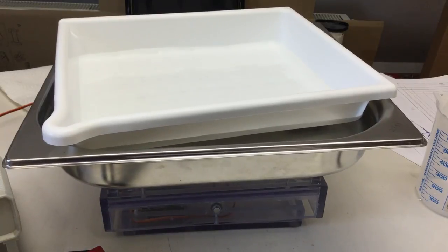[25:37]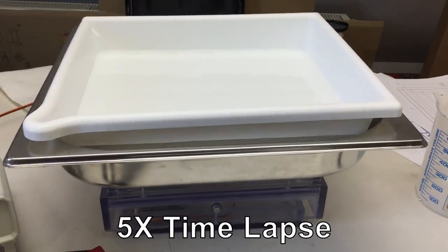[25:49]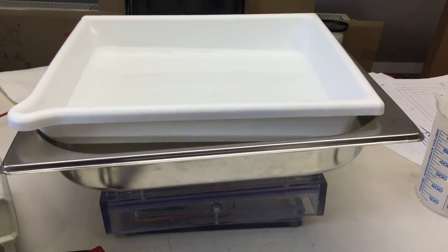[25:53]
And I would use that only, and I have to reduce the stroke really. Turn up the speed. Looks nice. Let's try this the other way around. Let's turn down the speed and turn up the stroke. Yeah, that's the most I dare to do with that much water in there. Maybe increase the speed. Live fast, live dangerous.
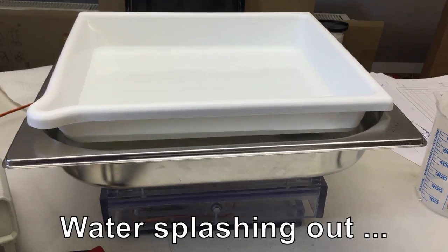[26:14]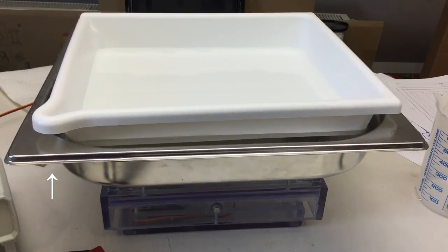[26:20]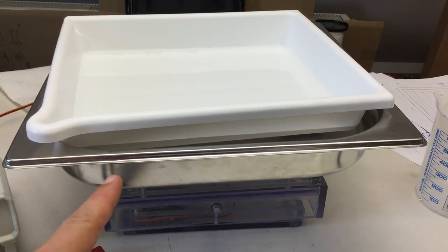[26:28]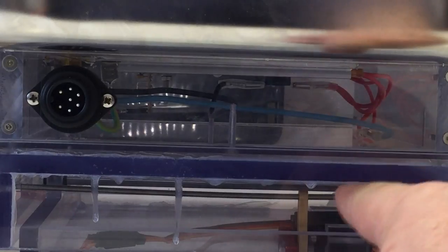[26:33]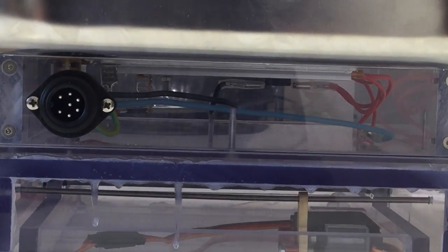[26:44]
Okay, now let's get serious again. Houston, we have a problem. Let me turn everything down. Okay. That's better. Let me show it to you. Okay, you should be able to see now, if I switch the whole thing on again, how that M3 rod is really flexing.
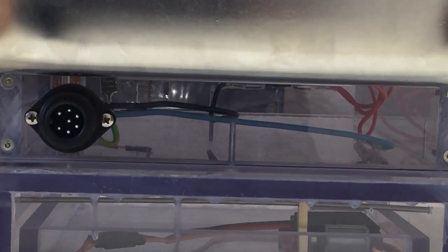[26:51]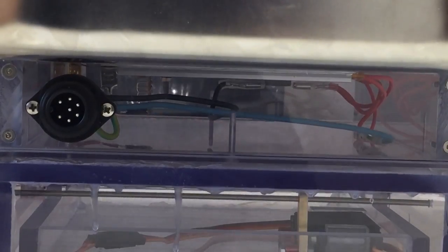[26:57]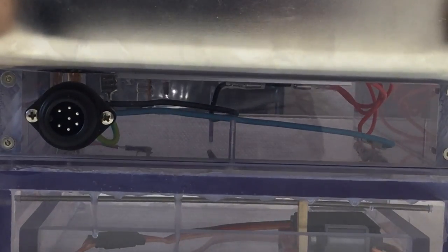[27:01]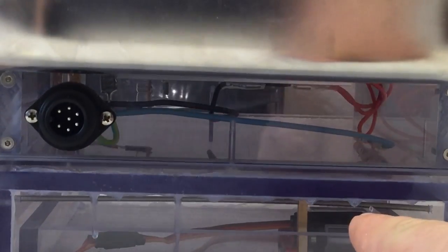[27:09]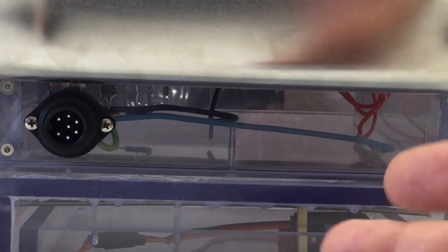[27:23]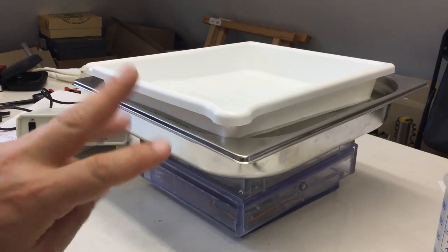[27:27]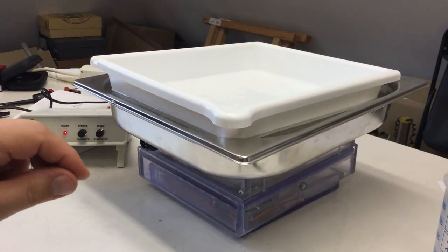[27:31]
Maybe if I increase the stroke again. Yeah, there. Oh. And that's not good. More speed. Yeah, just for the fun of it. You can really see how it's, yeah, that's 5 millimeters, 10 millimeters flex. That's too much. Okay, so for such high loads, I will have obviously to replace the pin with something more sturdy.
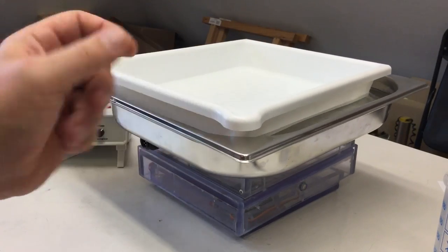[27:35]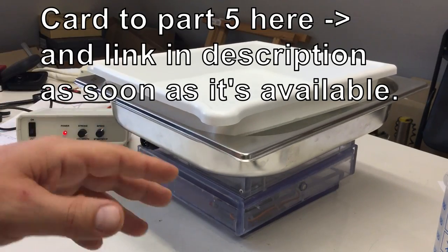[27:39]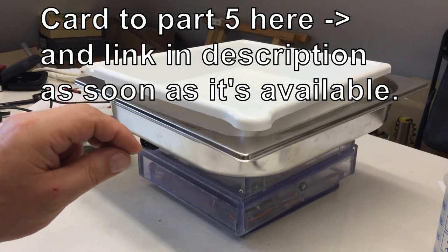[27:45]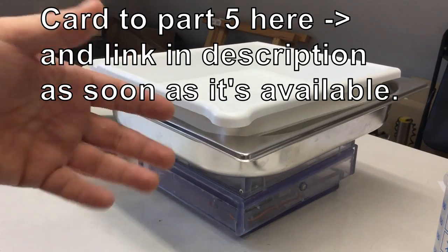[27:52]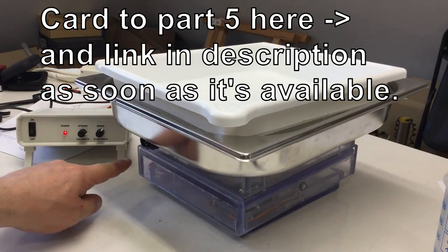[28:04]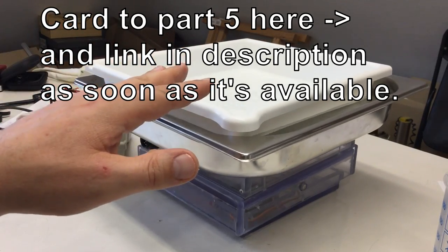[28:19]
That was the fourth part of my laboratory shaker project, and in the beginning I said it will probably be the last part, at least for now. I have already some ideas about enhancing the software. I wanted to clean up the code because it's a real mess, but I also want some more functionality. Second, maybe I really replace the pin by a real 4 millimeter bolt like thing, so 4 millimeter meat and only an M3 thread or an M4 thread at the end. I'll have to see.
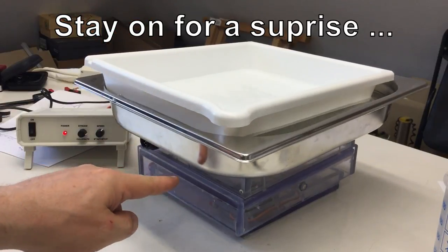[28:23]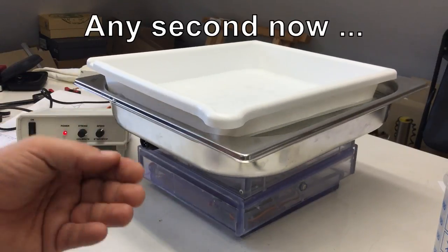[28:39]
And I have also an idea to build in some electrical contacts here with a little MOSFET attached and so on, to keep that thing from self-destroying when the software goes awry. That is, tries to move the servo in a position where the servo basically can't move because there's a laboratory water bath in the way.
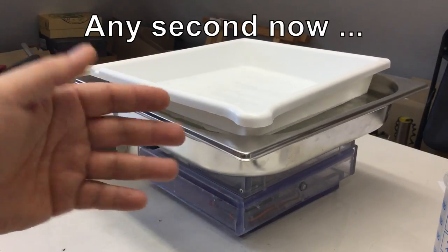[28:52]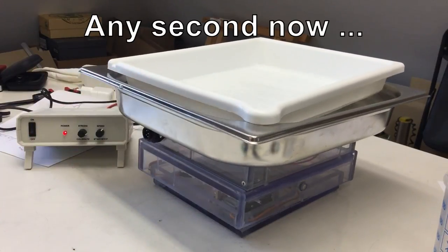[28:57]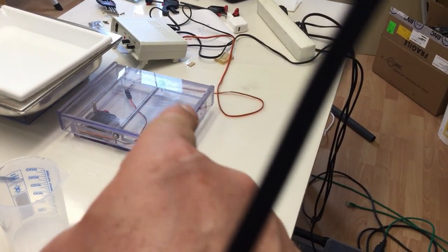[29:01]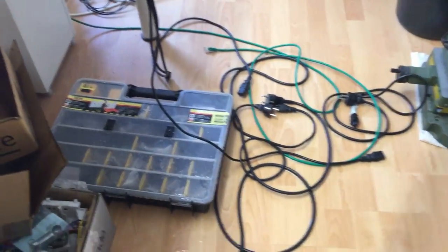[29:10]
Okay, a little catastrophe here. After I switched the power off, the whole thing pivoted completely backward. So, room for improvement.
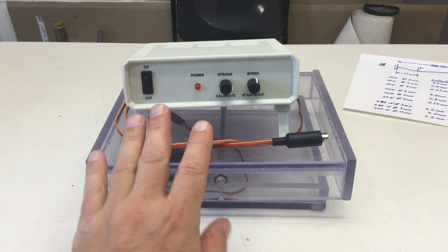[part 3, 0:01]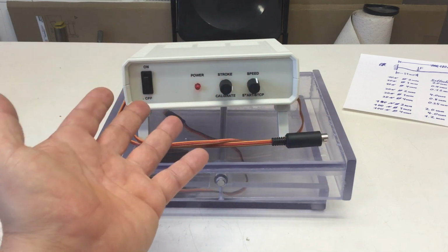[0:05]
Welcome back to the Laboratory Shaker project. In the last part, we basically finished that thing and tested it. Card here, link in the description.
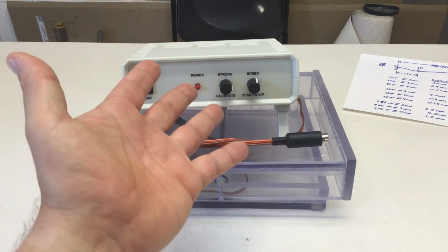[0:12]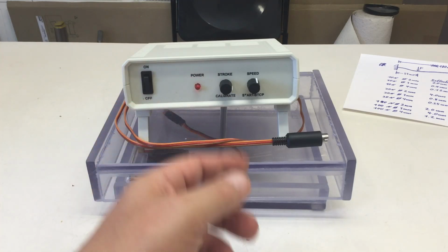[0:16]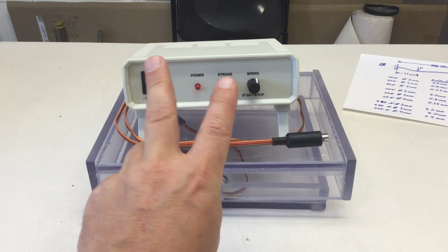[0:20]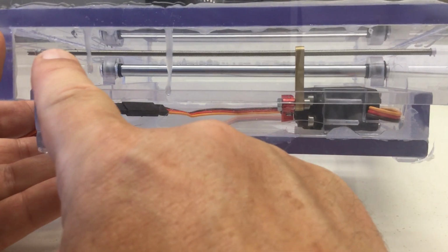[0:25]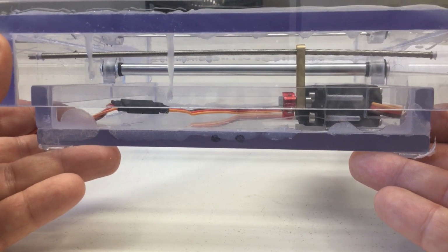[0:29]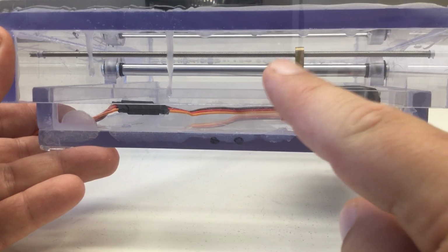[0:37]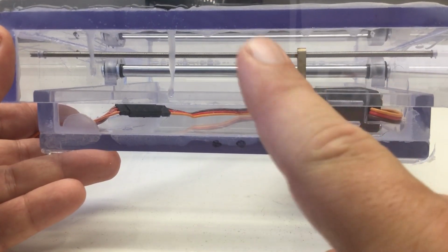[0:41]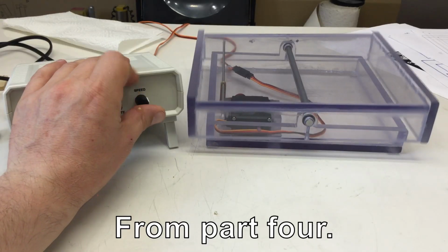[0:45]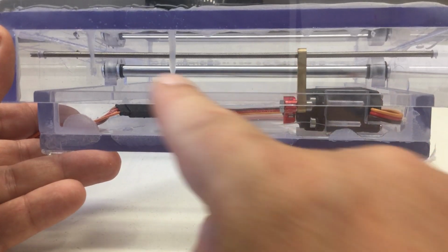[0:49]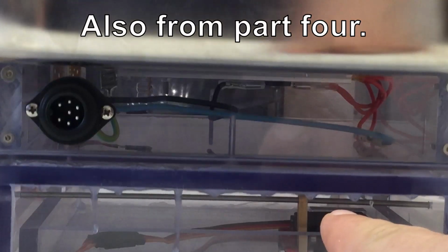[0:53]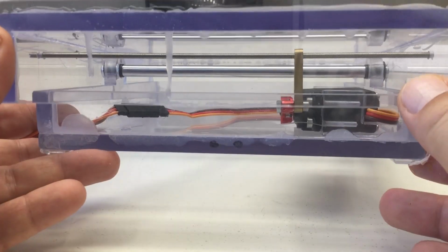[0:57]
However, the tests revealed two weaknesses. That is, the tests revealed one weakness, and at the end, I discovered a second weakness. The first weakness is that threaded M3 rod here, which has far too much flex when transferring force to the upper part, the seesawing part of the case. And that leads to some interesting phenomena. I mean, first some resonance effects. And second, a lot of flex under real load. 5 millimeters, 10 millimeters flex, that's too much. So that was number one.
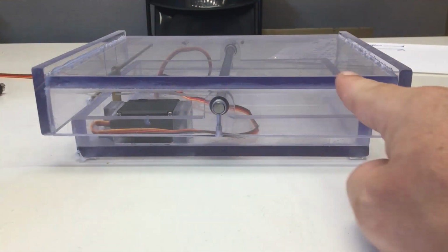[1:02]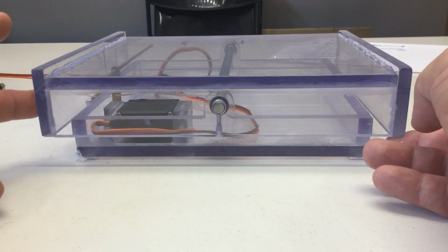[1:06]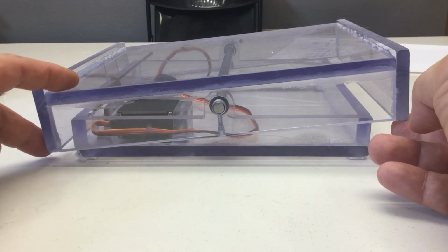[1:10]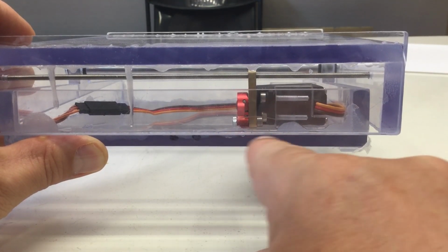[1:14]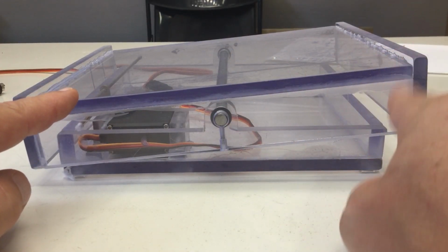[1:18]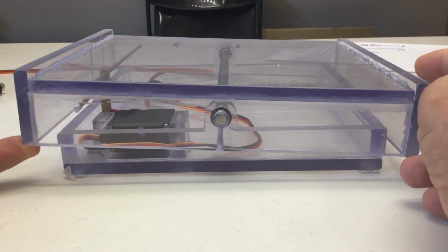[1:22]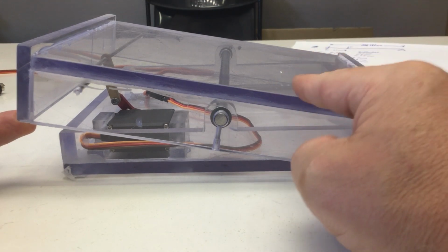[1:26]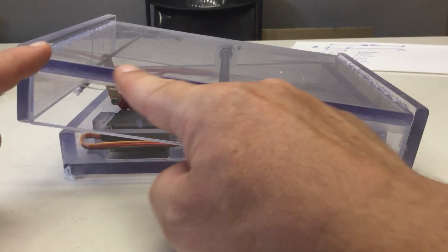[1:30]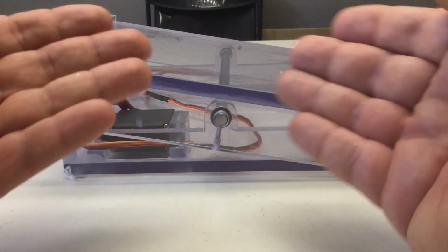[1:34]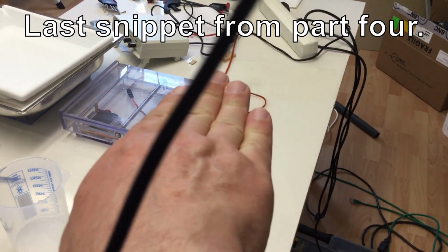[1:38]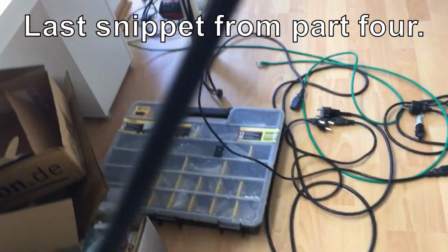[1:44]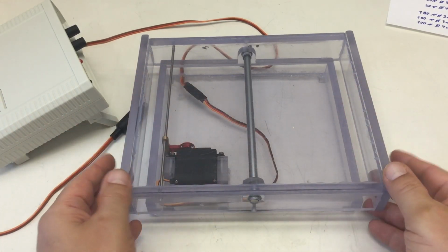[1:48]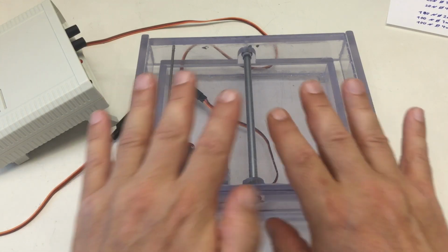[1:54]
Second, the range of movement. So on this side, the range of movement is limited actually by the servo arm hitting the bottom part of the case. But in the other direction, the servo arm is able to lift up as far as it wants. And basically, if you depower that thing and the servo is no longer controlling the motion, we get a very steep angle here. And that led to some catastrophe. After I switched the power off, the whole thing, yeah, pivoted completely backward. So I want to address both issues before I really start using that thing with some etching solution in the water bath on the top.
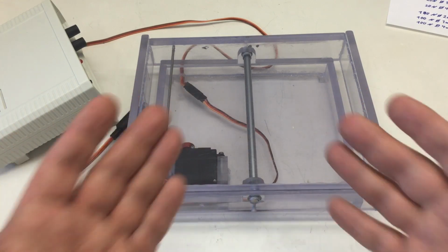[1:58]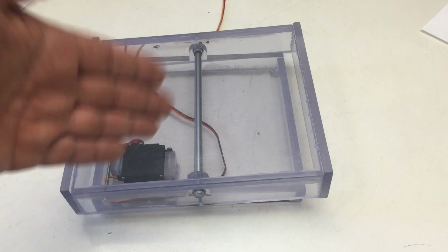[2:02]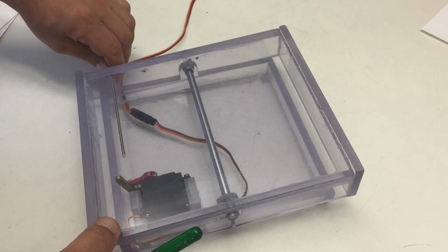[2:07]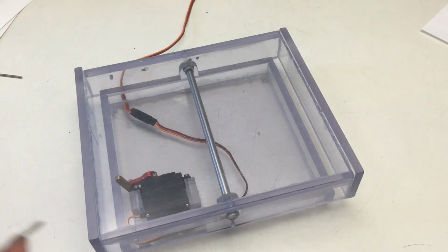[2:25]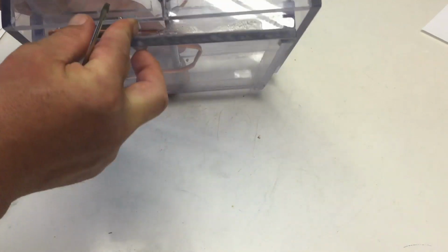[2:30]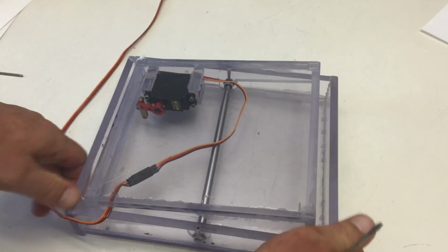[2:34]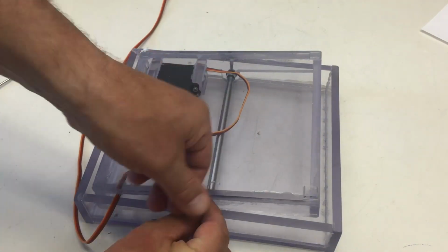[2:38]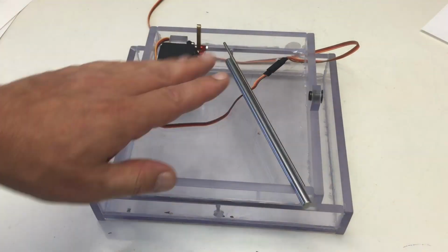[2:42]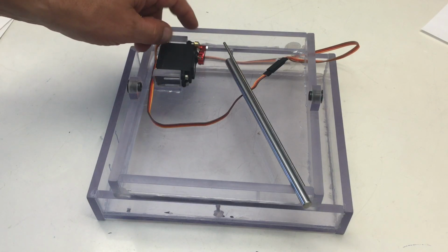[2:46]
Let's get started. Of course, I have to disassemble the whole thing first, but that should be pretty easy. Okay, another minor enhancement, thread only the far hole and make the other smooth so you can stick it through and thread it just in at the other side. Oh, I forgot I have the grub screws in. Just a second. And that's basically it. Oh yeah, and I have to get out that thingy here, my rod, but that should be also quite easy.
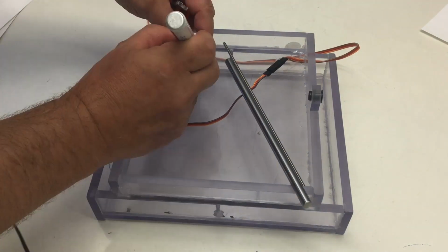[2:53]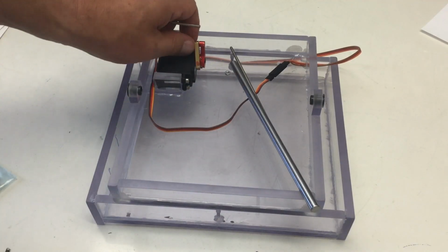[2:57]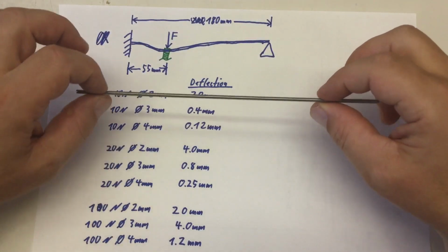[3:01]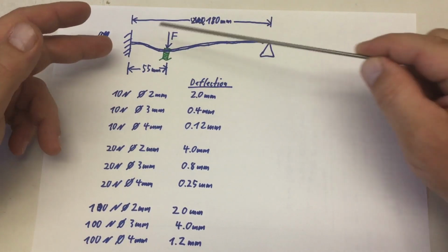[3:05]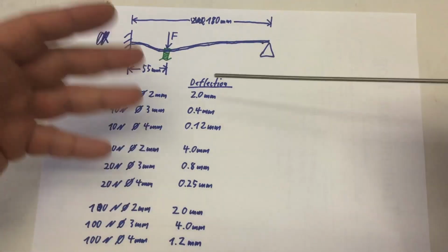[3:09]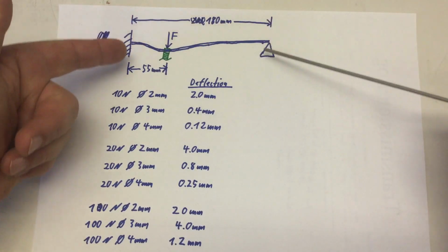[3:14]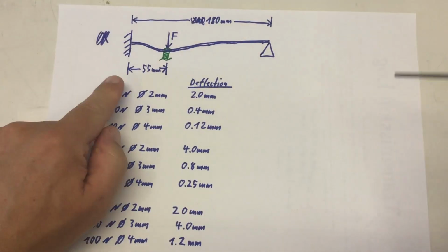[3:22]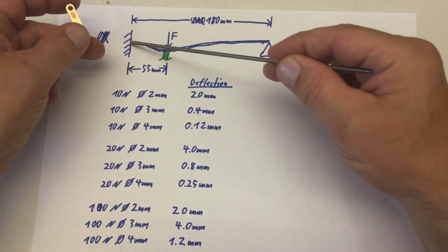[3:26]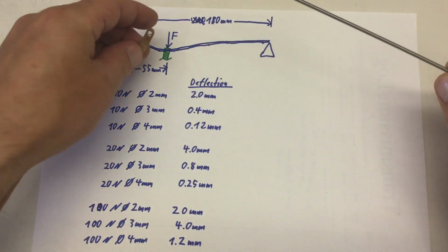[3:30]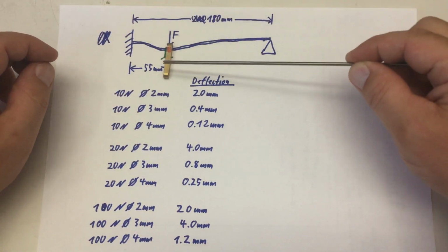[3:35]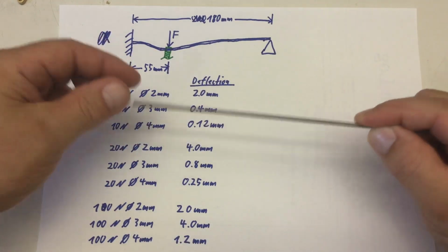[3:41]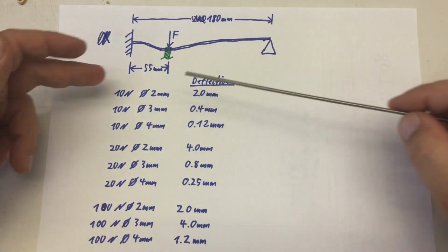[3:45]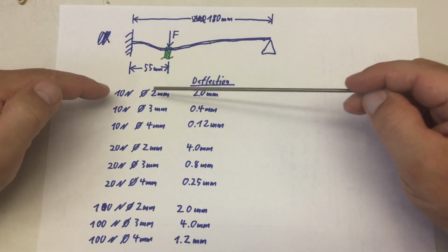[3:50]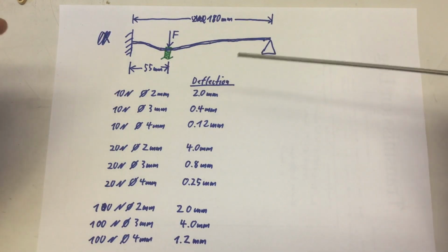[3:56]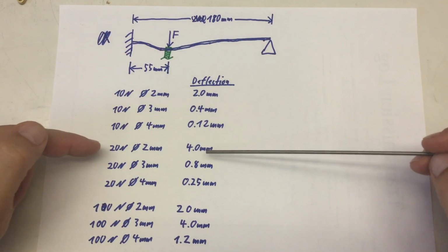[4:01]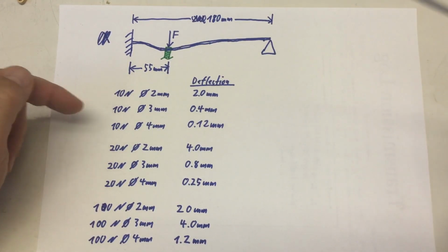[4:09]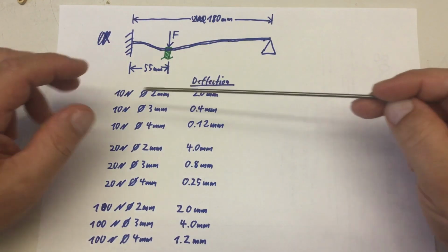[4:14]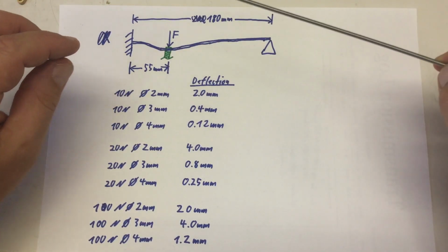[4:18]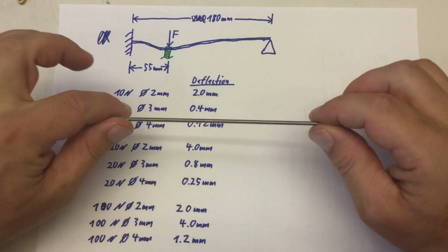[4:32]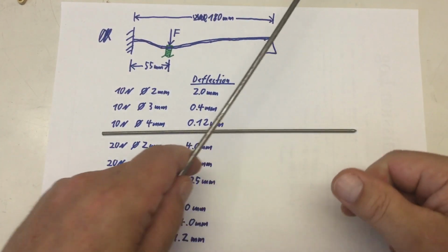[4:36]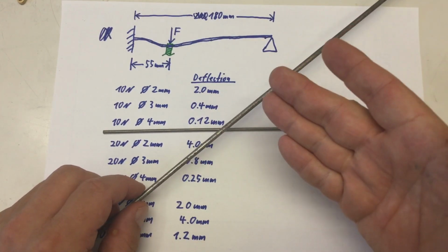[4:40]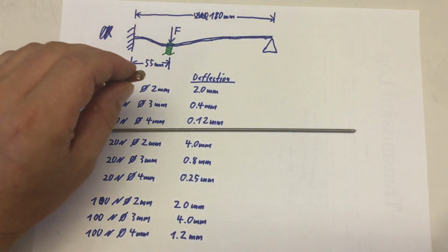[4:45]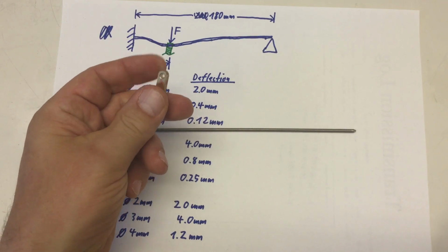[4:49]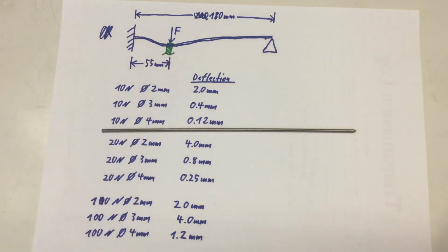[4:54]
So basically for a 2 millimeter rod, beam, whatever, at 10 newtons, it's 2 millimeters deflection. And if you look at the table, this is quite linear. So basically per kilogram, 2 millimeters deflection. For a 3 millimeter rod, per kilogram, 0.4 millimeter deflection. And an M3 rod is somewhere between 2 and 3 millimeters. If we just go up 1 millimeter, the deflection per kilogram goes down to 0.12 millimeter. So the plan is to replace my M3 threaded rod by a massive 4 millimeter rod. That should do the trick, hopefully. And of course, I will also have to widen up that hole here in my connecting rod to 4 millimeters. But that should be simple, hopefully.
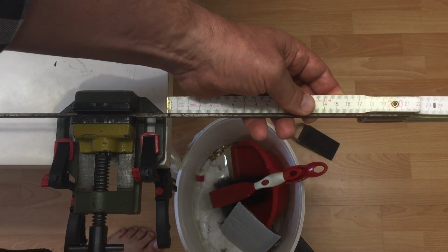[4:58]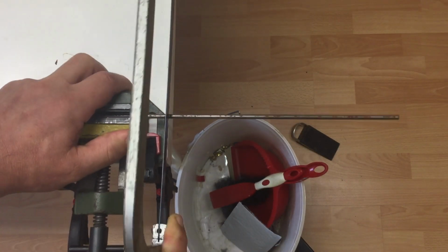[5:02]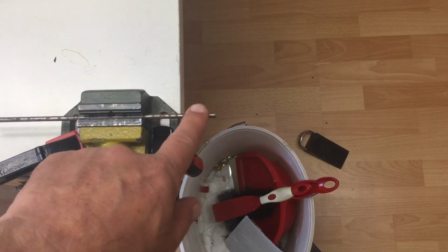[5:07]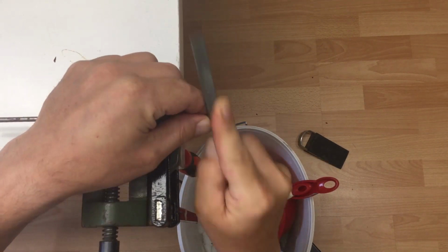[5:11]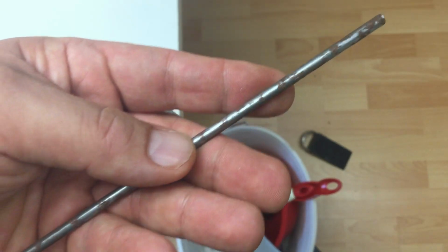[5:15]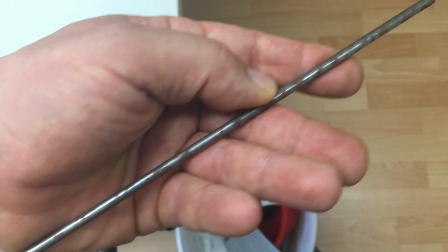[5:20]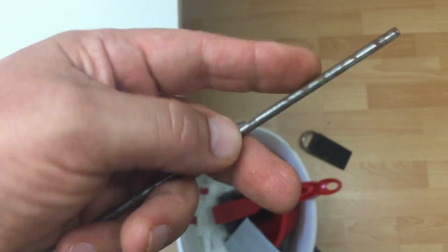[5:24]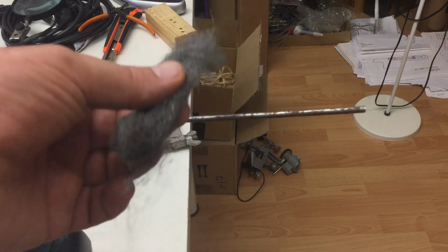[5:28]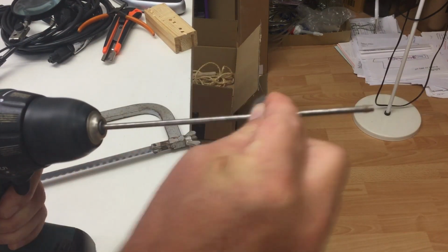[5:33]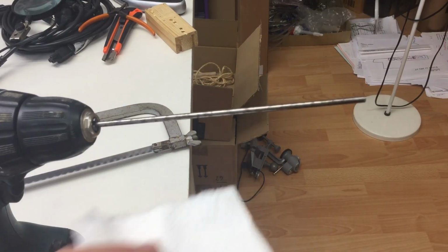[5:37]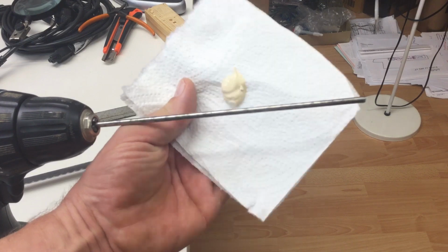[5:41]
Let's start by sawing off a 200 millimeter piece of that steel rod here. And clean up the ends a little bit. That steel rod sat in my cellar for, I don't know, several decades, so it has a little bit of rust on it. Let's remove that before we proceed. A wee bit of steel wool should do the trick. And for good measure, a bit of stainless steel polishing paste at the end.
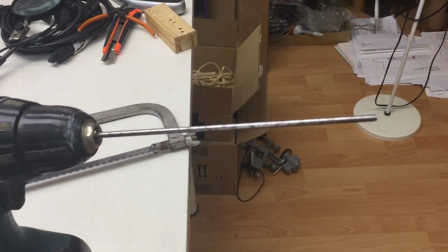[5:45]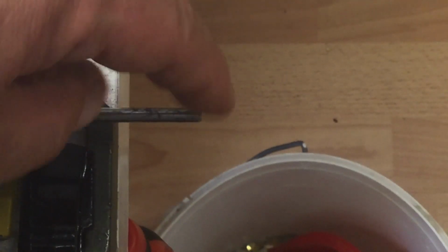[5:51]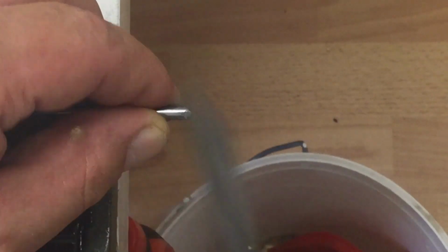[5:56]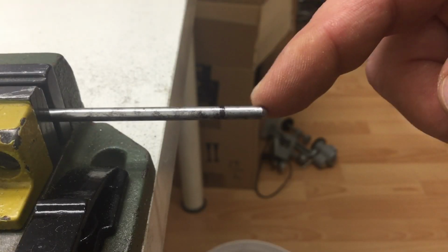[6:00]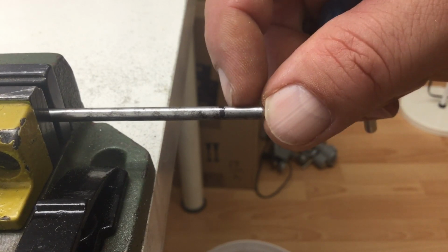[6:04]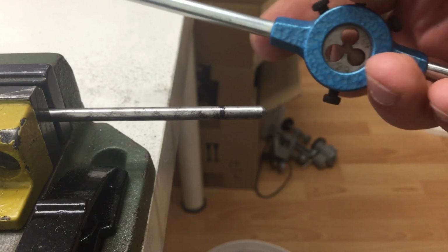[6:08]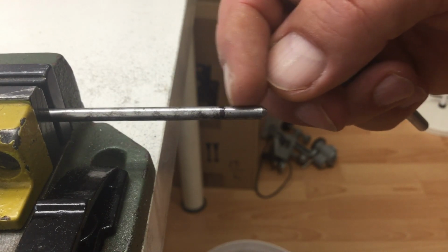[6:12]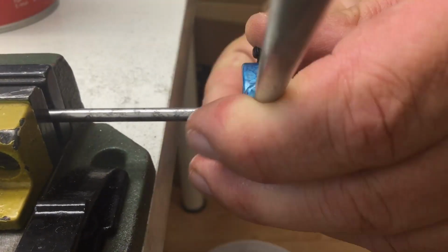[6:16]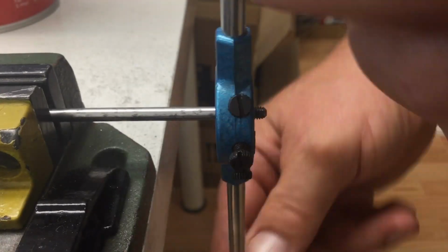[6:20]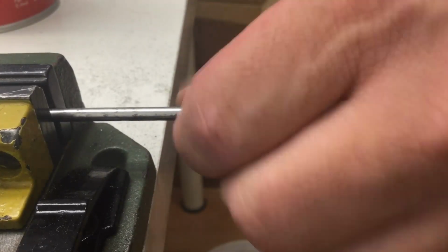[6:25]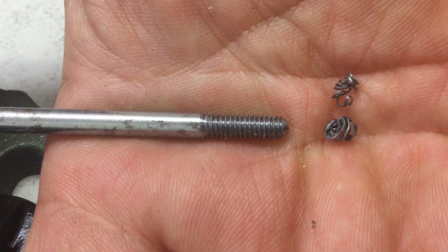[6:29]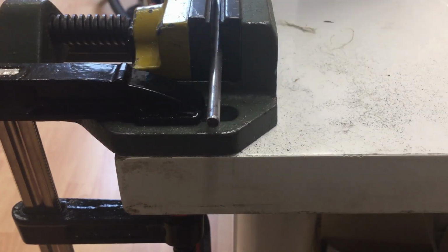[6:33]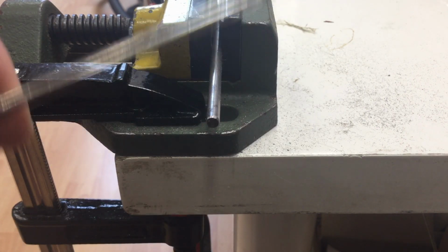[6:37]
I want to put more of a face on this end here before I start cutting the thread. I want to cut the thread 8 millimeters in, so the thickness of my wall, plus 4 millimeters the thickness of the die, so I can be sure I have a nice thread all the way. Just if you're wondering what kind of chips that kind of thread cutting produces. On the other end, I need a slot for my screwdriver to screw the whole thing in.
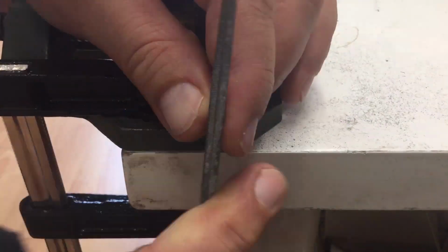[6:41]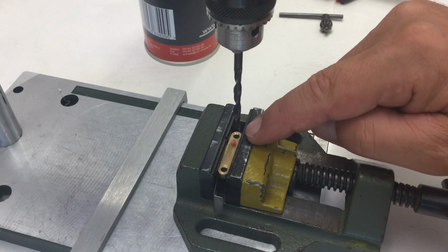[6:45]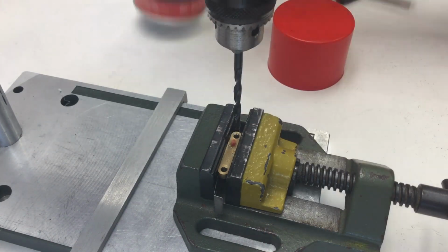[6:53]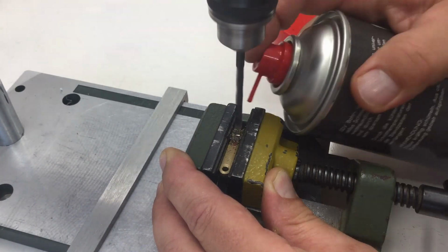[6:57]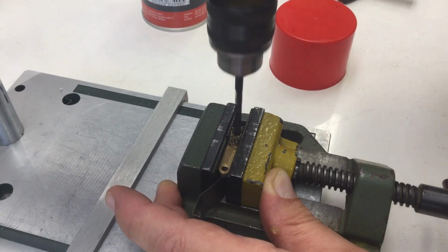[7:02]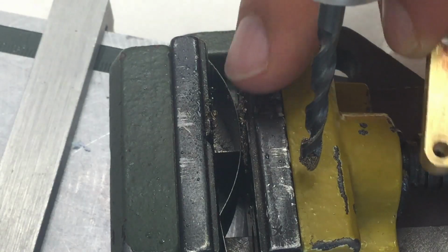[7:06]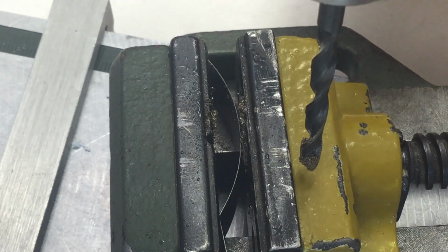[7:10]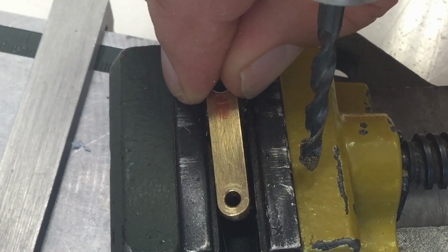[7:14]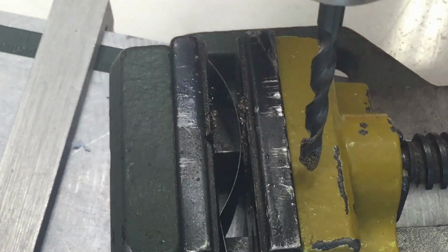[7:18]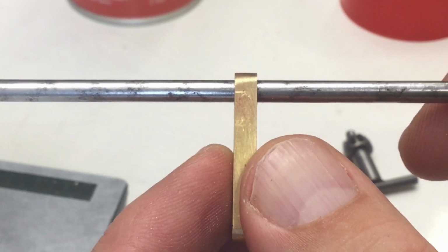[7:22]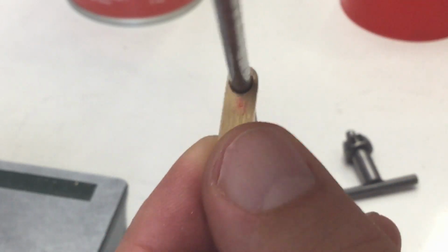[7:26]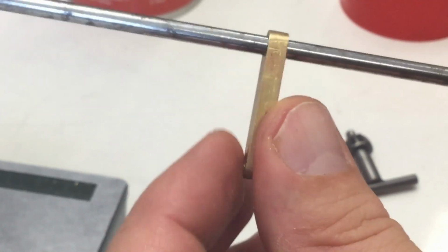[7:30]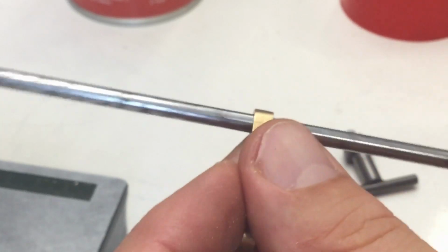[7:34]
Let's widen up the hole in the connecting bar real carefully to 4 millimeters. That was actually quite easy. By the way, I used that bendy piece of spring metal as a parallel to place my connecting rod parallel into the vise. And now my 4 millimeter rod goes easily through my connecting rod. It's still enough beef left there and without too much wiggle, so it's a nice fit for this application.
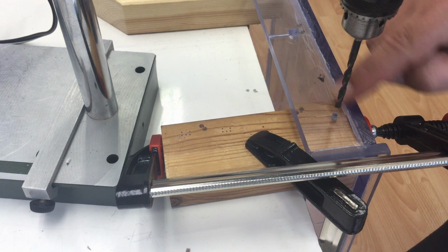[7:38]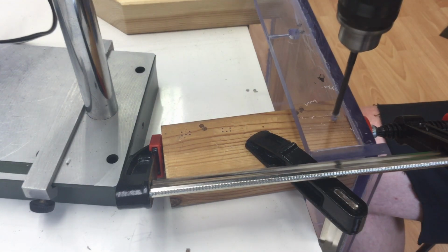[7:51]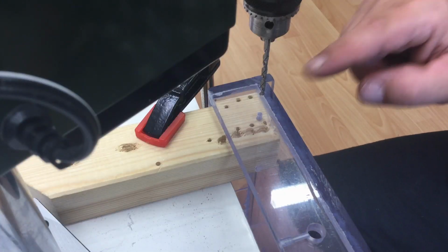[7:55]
Now for the holes in the seesawing upper part. I need to widen that former M3 hole here to 4 millimeters just to stick the 4 millimeter rod in. On the other side, I have first to pre-drill it with 3.3 millimeters before I can cut in an M4 thread.
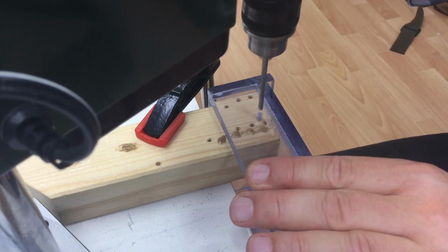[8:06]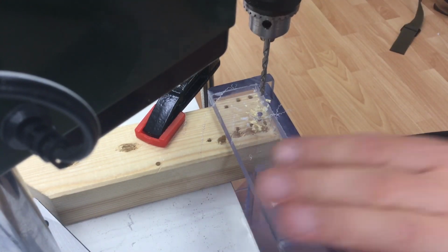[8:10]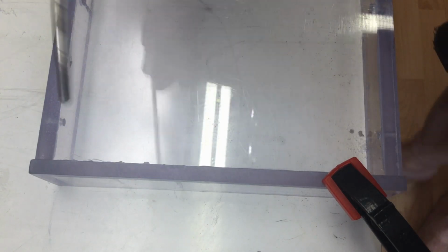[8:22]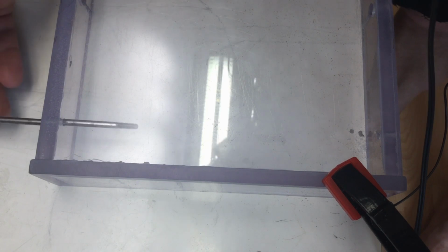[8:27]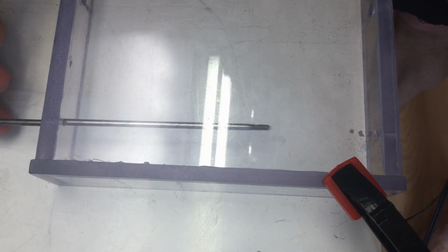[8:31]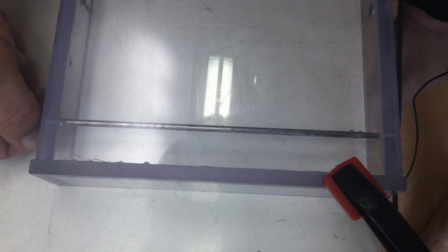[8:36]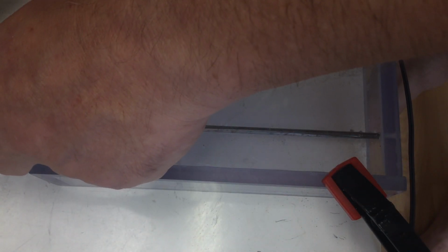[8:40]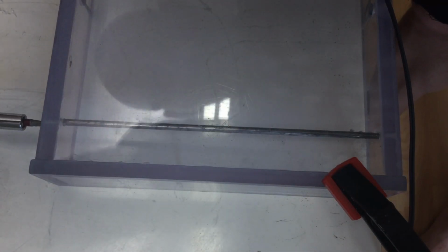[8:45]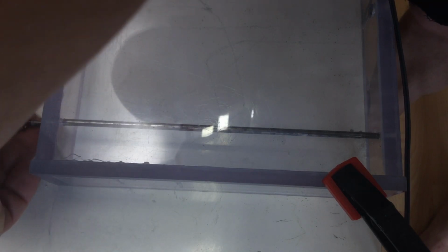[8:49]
And now I should be able to get my 4 millimeter rod in here without too much difficulty. Okay, I reworked that hole a little bit off camera with the file because I didn't quite hit the other end. But here we go. We'll be out of sight in a second. And in it goes.
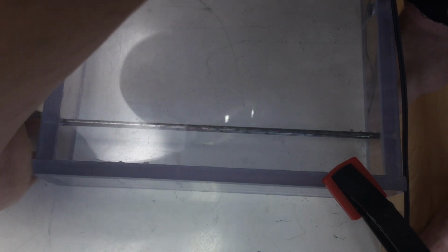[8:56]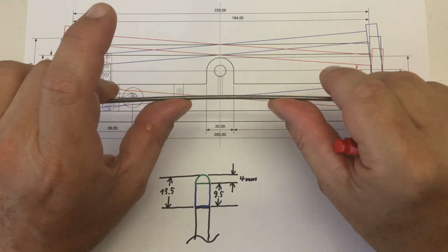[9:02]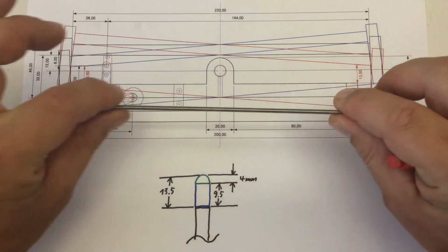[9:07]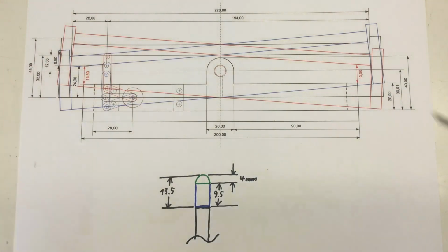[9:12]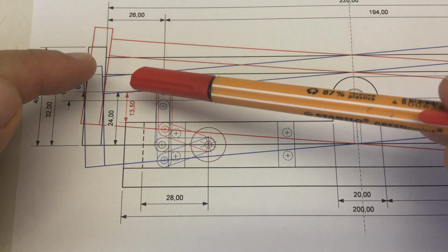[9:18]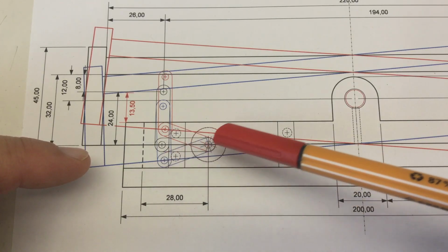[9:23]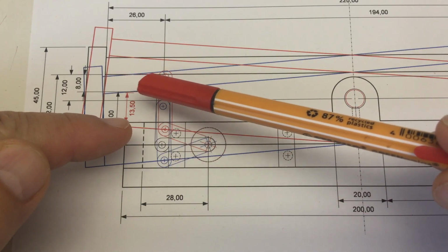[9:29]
Wonderful. Now that we've dealt with the flex in my axle, or rod, or in this application really an oversized, overlong pin, let's tackle my range of movement problem. I've already shown that in the intro, but anyway, if my seesawing part goes down on that side, its range of movement is limited by the servo arm hitting the bottom here. And I still have a space of 13.5 millimeters left between the seesawing part and my base.
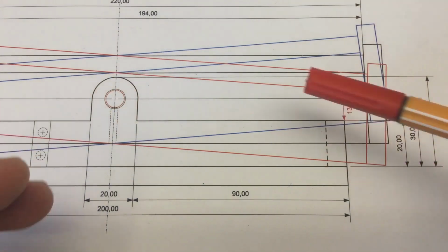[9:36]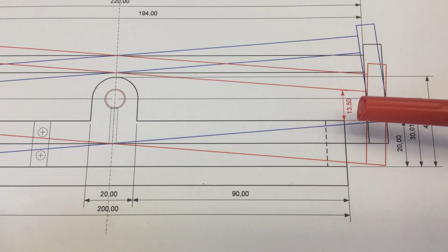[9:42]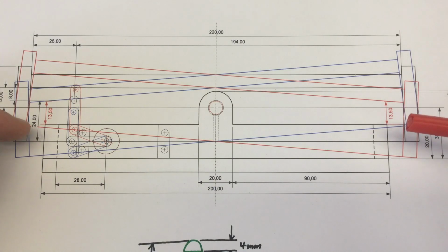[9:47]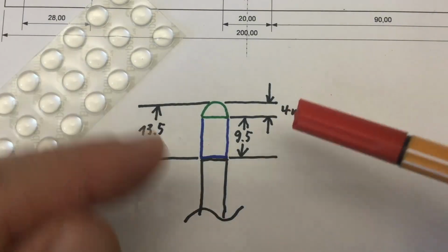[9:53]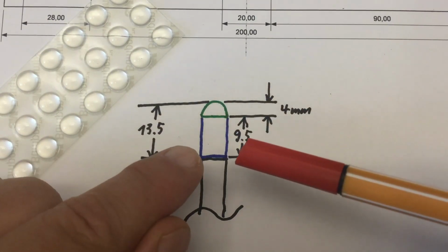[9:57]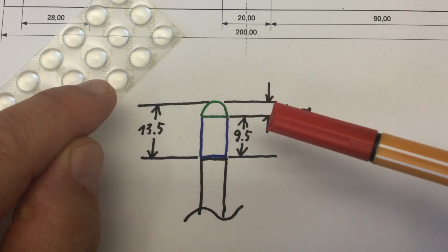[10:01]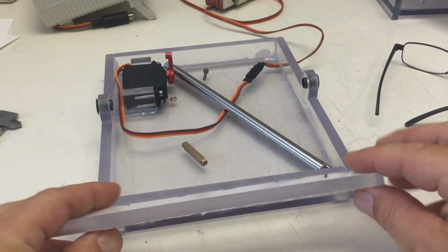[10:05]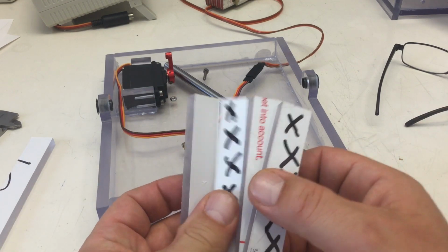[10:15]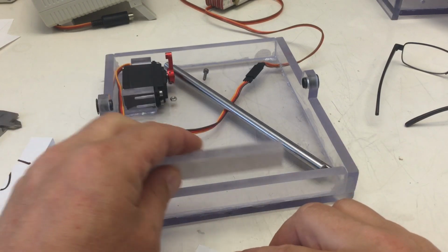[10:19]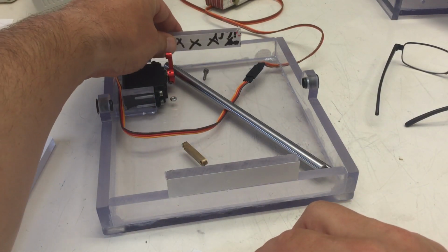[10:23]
On the other side, nothing is hindering the servo arm to lift up even further and to close that 13.5 millimeter gap. So the idea is to build up my base here at the sides by 13.5 millimeters. And I intend to do that by gluing on a 9.5 millimeter high piece of polycarbonate with some 4 millimeter high bumpers on top. I considered building up the walls here over the whole width, but that would look a little bit unwieldy. So I also have four of these pieces left from the build, and I will cut them to the right height and glue them on just centered here.
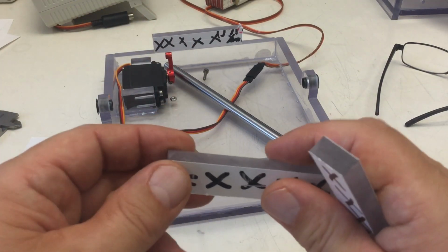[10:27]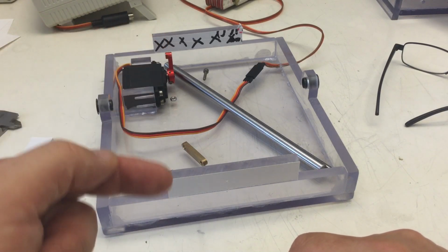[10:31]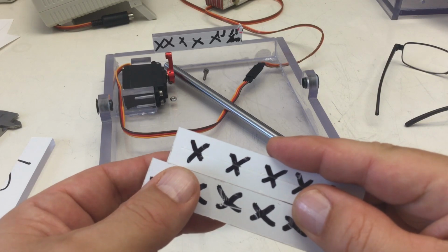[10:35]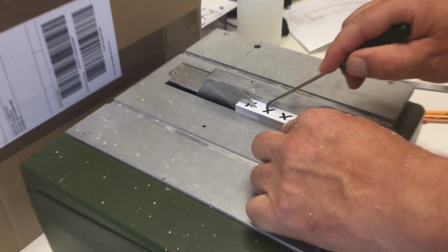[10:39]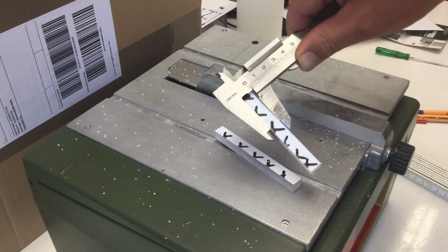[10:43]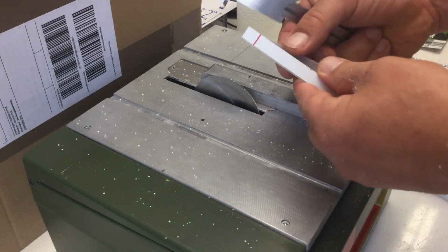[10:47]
It's not that bulky. And I have four of them, so if there should be a mishap while sawing them, I still have a second free try. Both pieces came out at 9.7. That's good enough for this application, and I'm happy.
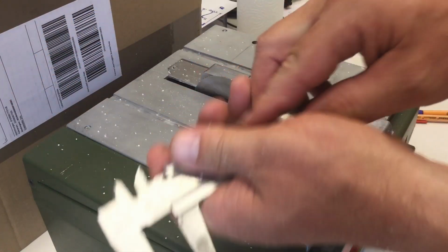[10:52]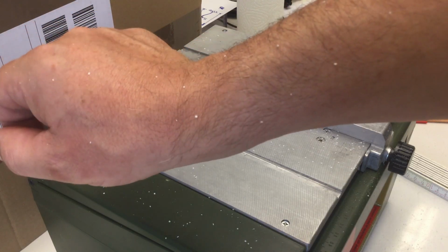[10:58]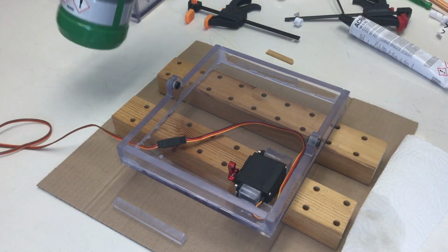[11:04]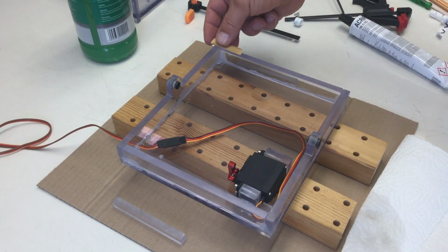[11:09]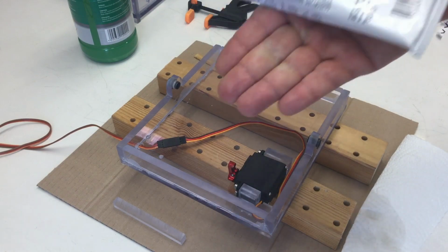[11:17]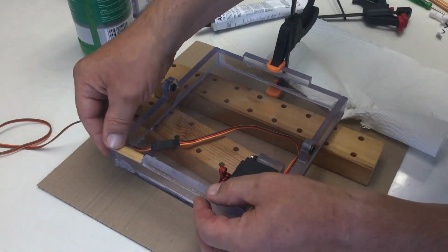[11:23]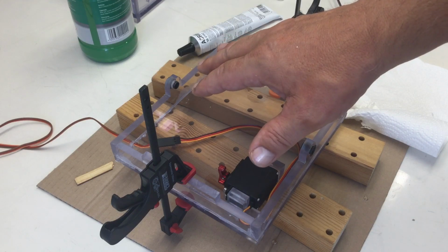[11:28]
So let's clear up that mess. I don't know if you can see it, but these polycarbonate chips are everywhere and they stick everywhere. All surfaces have been cleaned with alcohol as usual. I have my parts. I have a little wood stop here at the back so I can center them properly. And of course I have my glue. So let's glue. So we let that dry now overnight and then we'll continue.
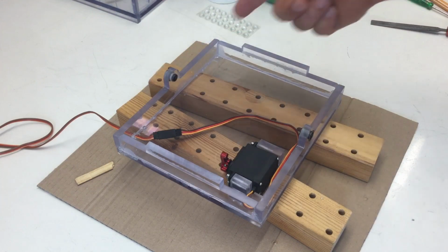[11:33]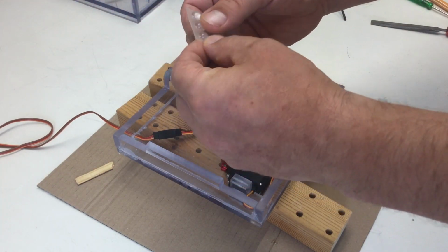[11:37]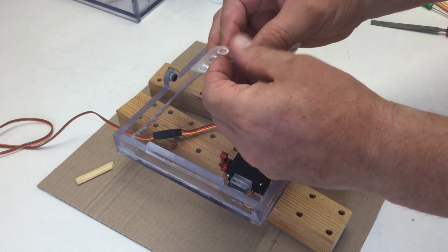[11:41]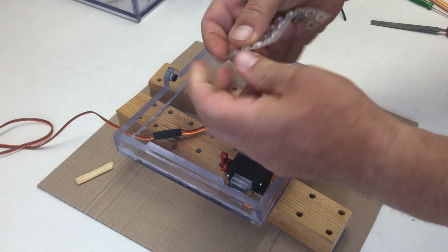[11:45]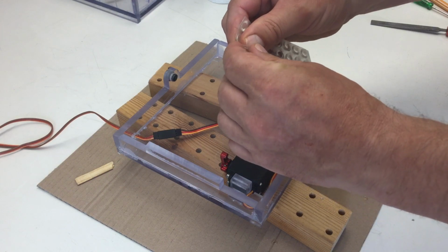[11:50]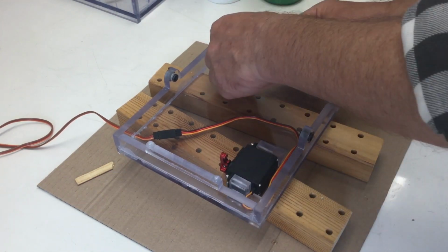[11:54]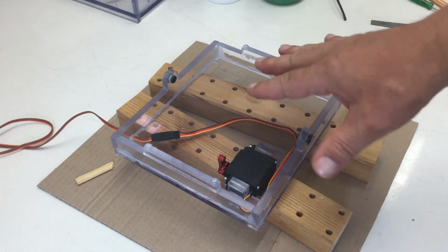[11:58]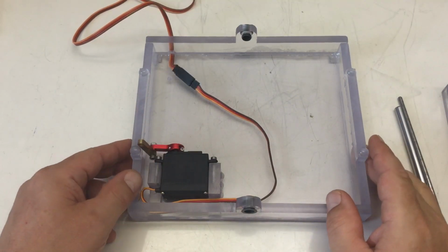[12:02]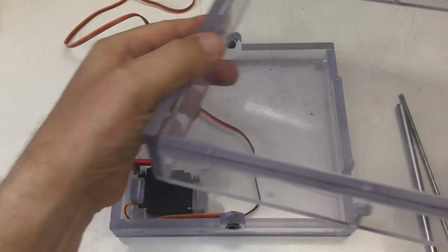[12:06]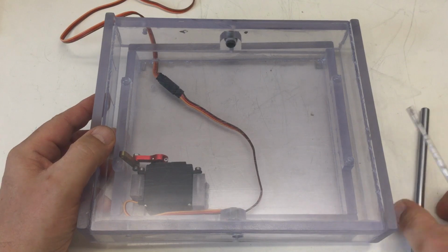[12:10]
It's the next day. I already removed the clamps and cleaned these surfaces, so let's put our silicon bumpers on, if I can get one off. Not that easy. And that's it. Now let's put everything together again. Now we can assemble the whole thing again. And yeah, like last time, we start with our pin here in the back, which should be a wee bit easier because I just have to stick it through.
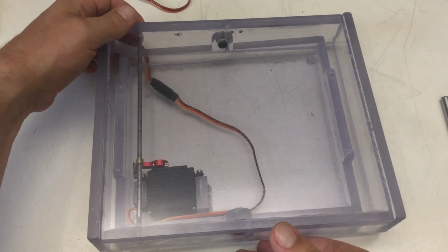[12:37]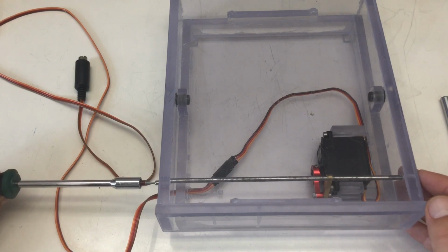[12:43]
It's hot again today, so I have little bit of sweaty fingers. That was easy. Now hitting the back. Yeah, we're in. So I first go a little bit counterclockwise here until I feel the thread snap in, and then I screw it in, which is also quite easy. All a very nice fit.
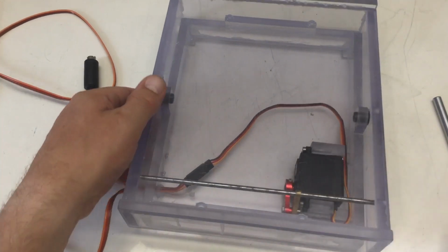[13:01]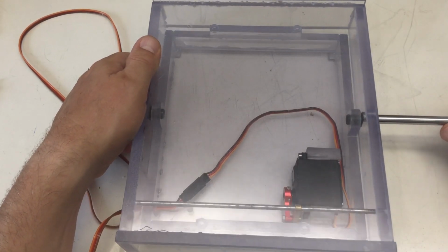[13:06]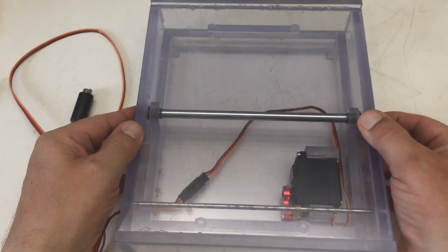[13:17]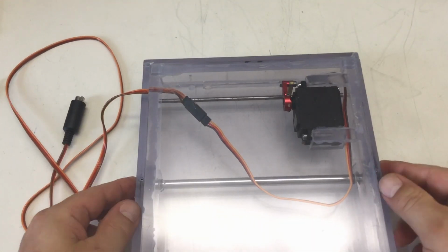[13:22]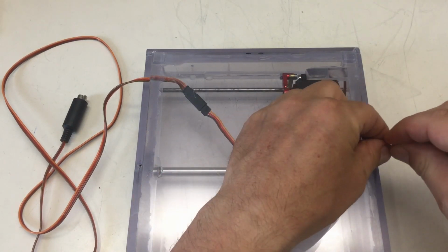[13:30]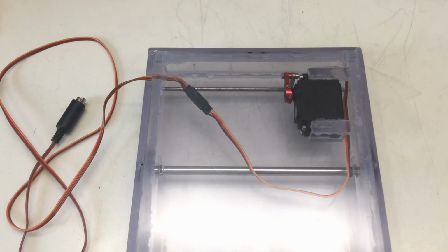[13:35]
Now for our axle. Just have to hit the hole. That was no problem last time, so it shouldn't be a problem this time. And finally, our two grub screws to keep the axle in place. That's it. We're finished. Now on
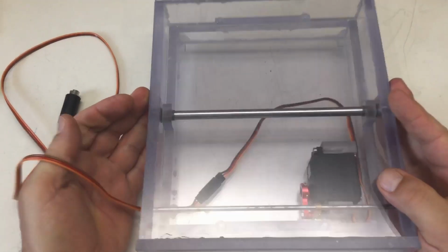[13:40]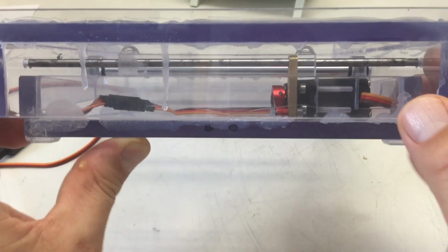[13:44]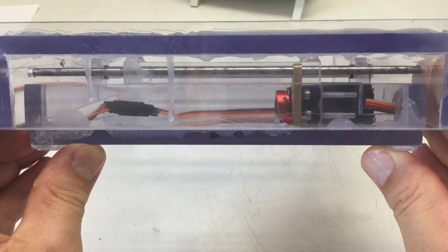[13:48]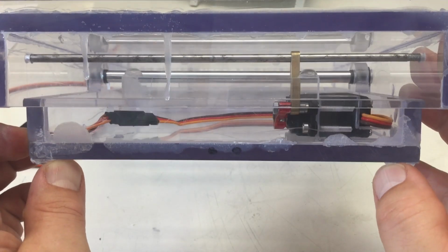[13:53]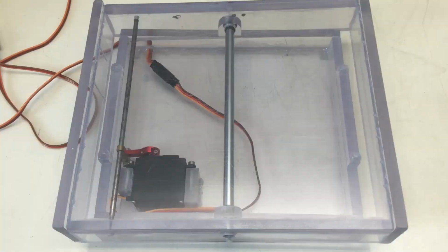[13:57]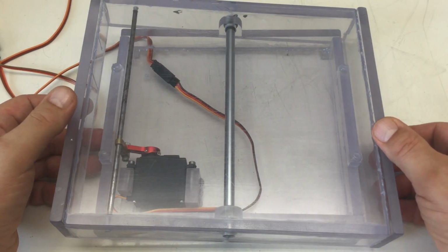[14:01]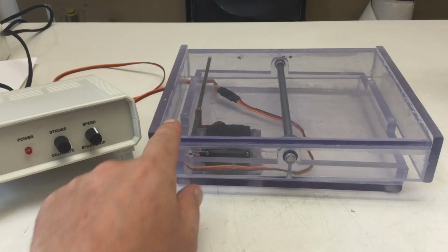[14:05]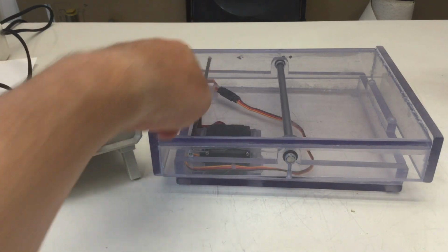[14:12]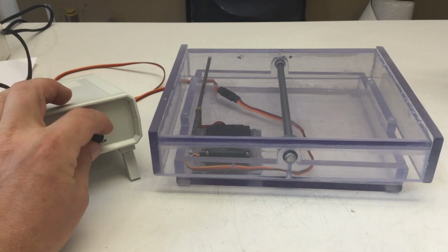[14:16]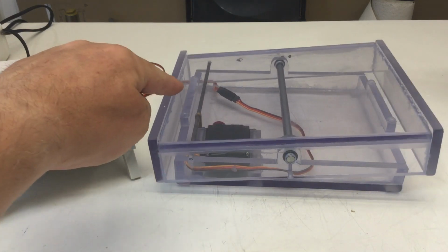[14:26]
to the testing. So the first thing you notice is if I move the seesaw just against the unpowered servo, there's only very little flex here in my pin, and the range of movement of my seesaw is obviously also limited. Now let's see if we still have that resonance effect due to the flex of the pin here. Okay, that should be maximum speed. Now let's go up with the stroke. And no, this is not flexing, that's just a trick of the eye.
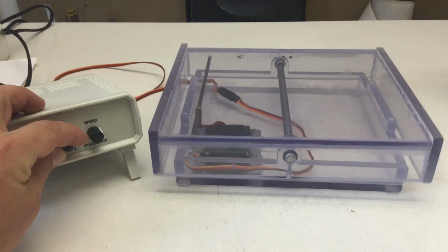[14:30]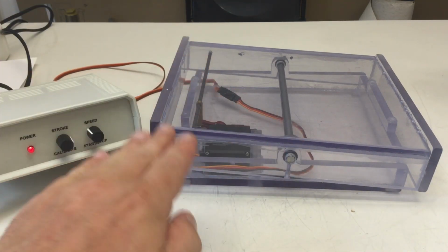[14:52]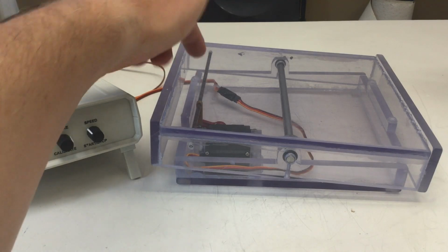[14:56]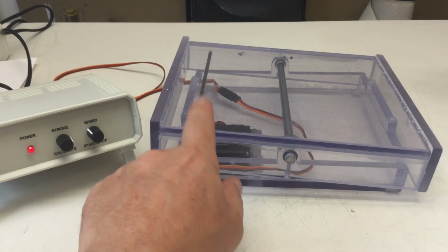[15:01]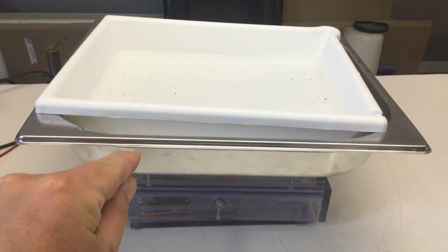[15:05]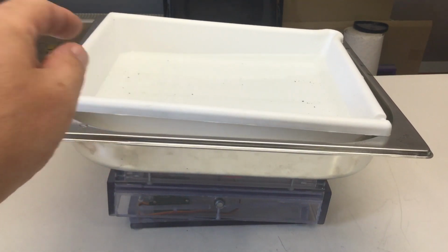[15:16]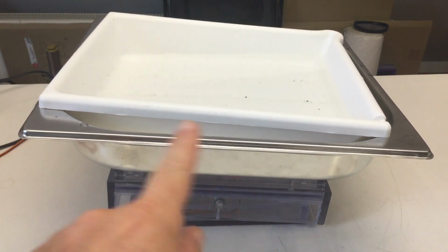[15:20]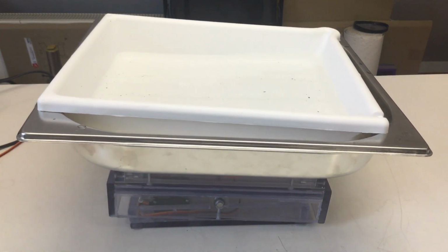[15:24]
Maybe at a lower speed? Nope, no more resonance. So this was really the springy effect of the M3 pin here, which was a little bit too skinny. Now let's put some load on that. I put my laboratory water bath, link in the description, on top and filled everything up with the water, 1 kilo down here, 1 liter, and 1 kilo up here, plus the whole weight of the stuff. And yeah, there's no more wiggling at the end.
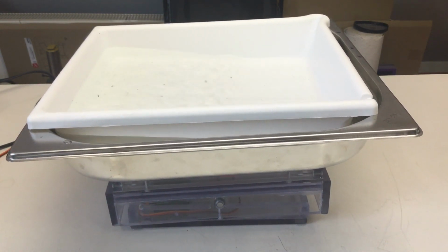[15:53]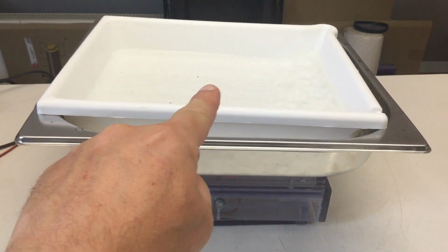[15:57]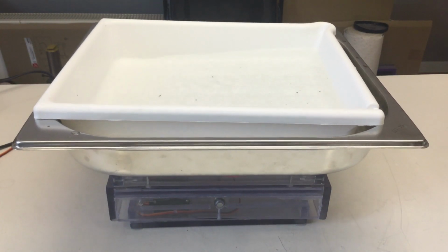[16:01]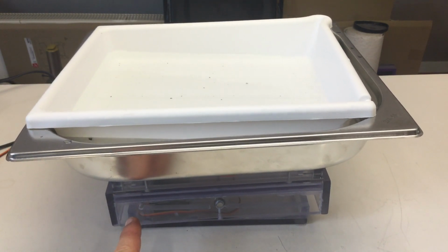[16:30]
Let's maybe reduce the stroke a little bit and go up with the speed. Well, that looks nice enough. Okay, now you've seen the waveforming here. I cannot go any faster, but maybe more stroke again. Yeah, taking risks here. Okay, let's go down with the stroke and the speed, or both. Let's have a look what's going on inside here.
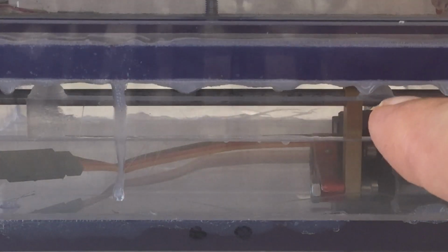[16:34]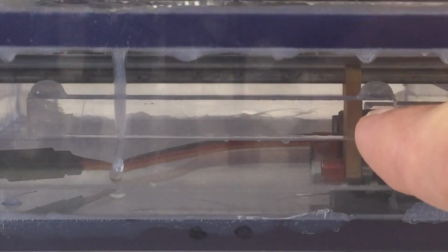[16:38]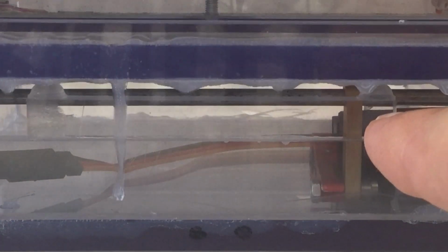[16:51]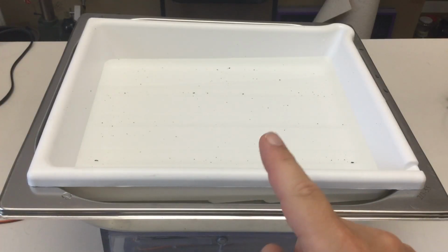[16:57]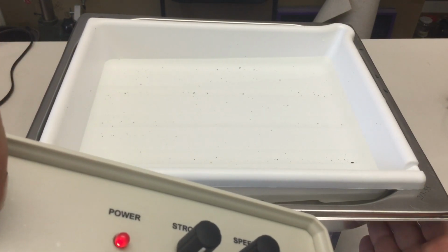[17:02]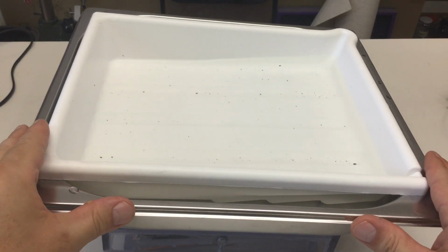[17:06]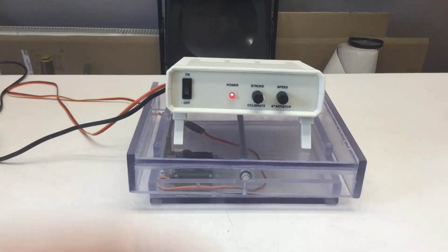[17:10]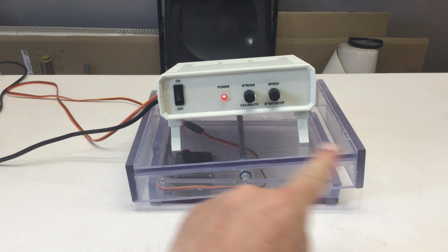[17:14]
Yeah, there seems to be only very little flex, so nothing like half a centimeter or so. Let's speed things up. Yeah, perfect. Okay, now I'm getting a little bit too fast. The wave is building up above. And if I depower that thing now, it can at most go to that position. Everything's fine. So that was the latest installment in my laboratory shaker project.
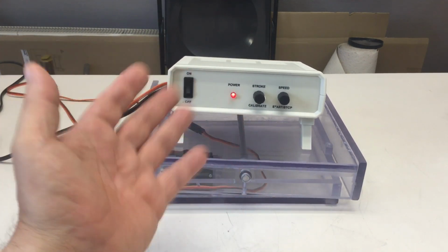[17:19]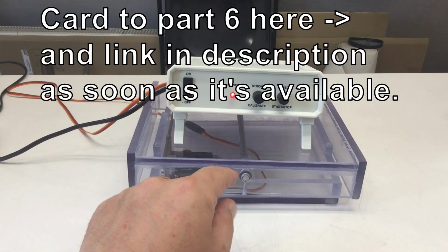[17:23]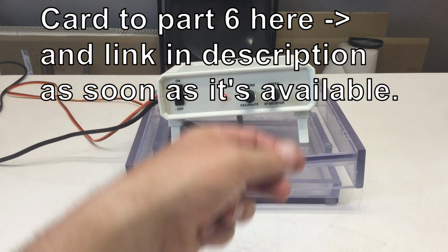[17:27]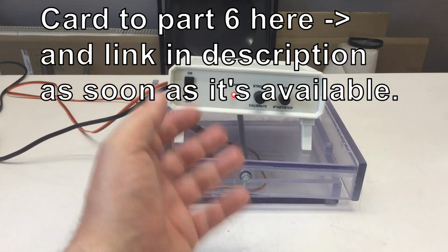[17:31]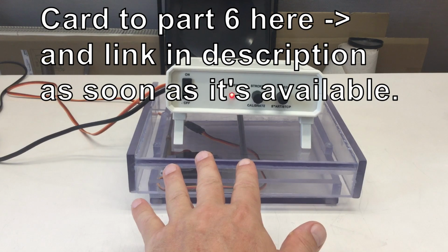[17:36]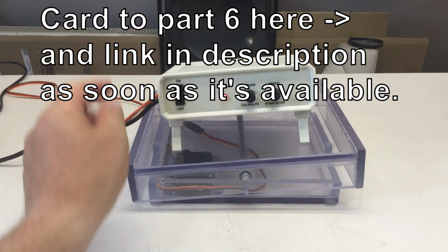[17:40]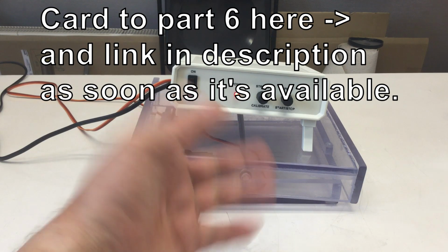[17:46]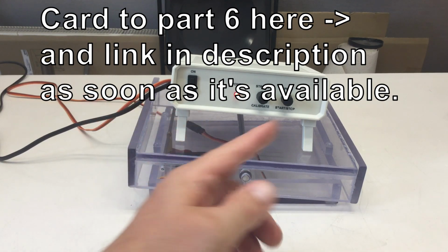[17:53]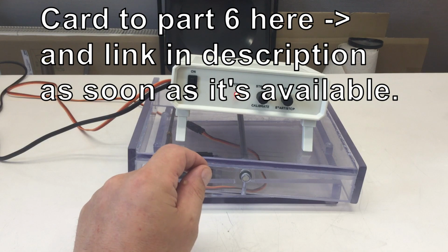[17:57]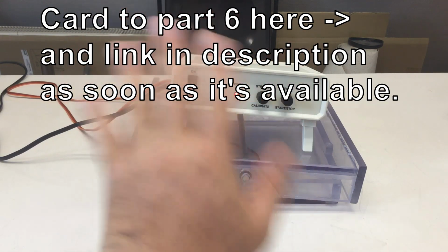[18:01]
There will probably be some more parts in the future, but these will all center on the software inside here. Yeah, I promised you I'd clean up the code at one point, but I have to motivate myself to do it. I also want to change the code slightly. For example, if I stop that, I want to stop it at the level position and start from the level position. And maybe I'll exchange the servo, because the servo, you saw that review here, link in the description, was quite shitty. Till then, bye.